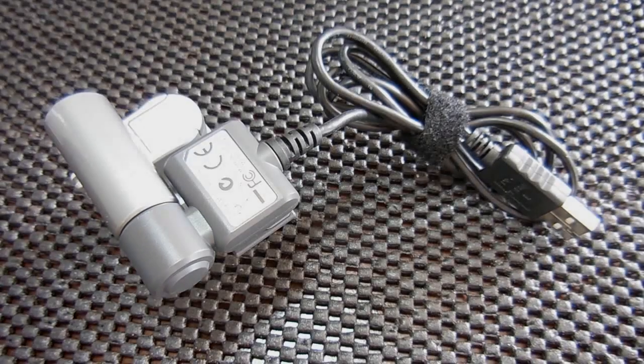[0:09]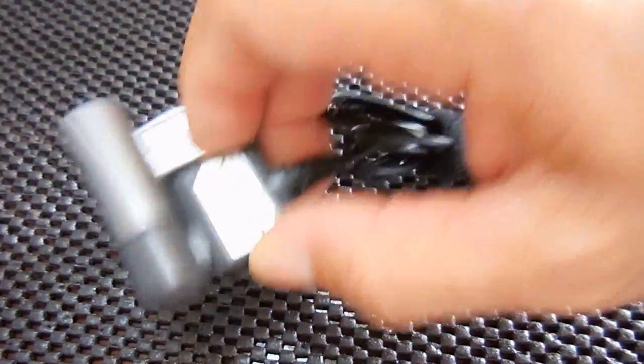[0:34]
In today's video, I'll be showing you an excellent way that you can make a microscope for your computer, which can take quality images as well as video. The total cost is actually very inexpensive. You can do this for around $13 or less if the parts are purchased on eBay. The microscope here that you see that plugs into my computer will magnify up to 50 times. Let's get started. I'm going to show you how to put one together.
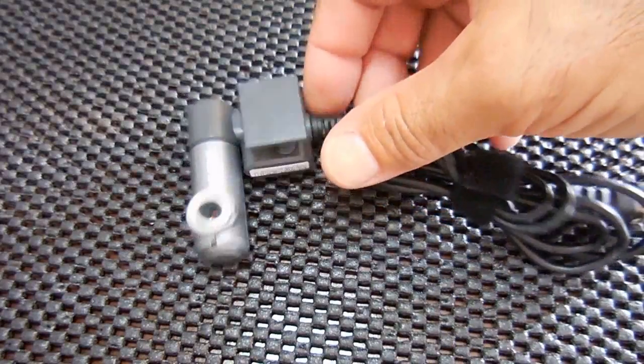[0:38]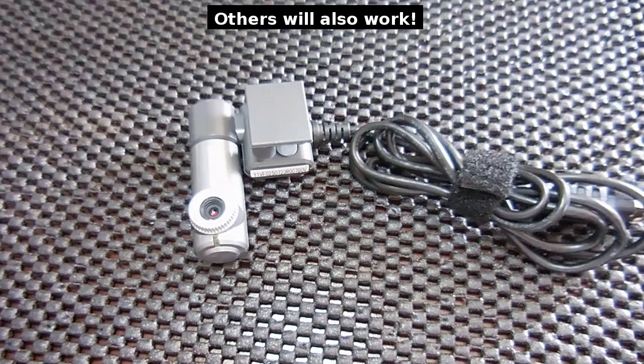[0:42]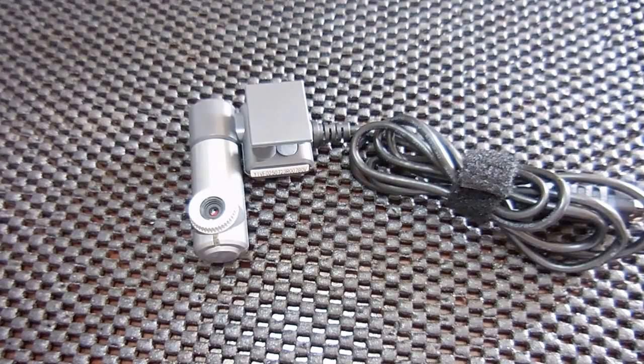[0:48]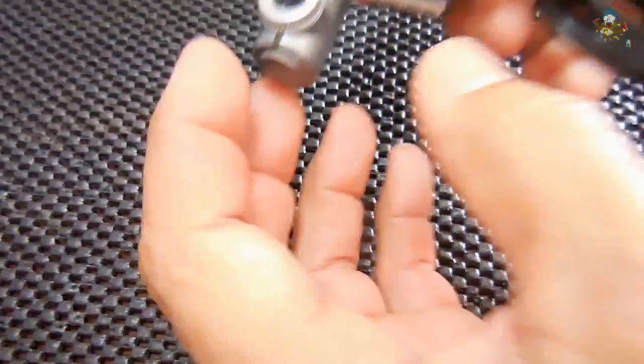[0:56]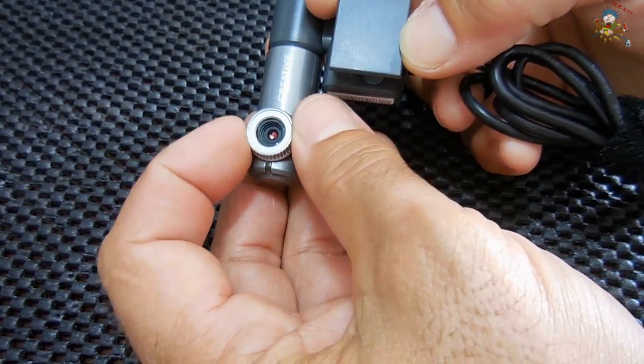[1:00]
The first thing that you're going to need is one of these older Creative Live webcams. The one you're looking at here is model number VF0250. Now, I picked this one up, you see here, for around $8 shipped. You can find these on eBay used between $5 and $12 each. This one here has an adjustable lens for focusing. This is not an autofocus.
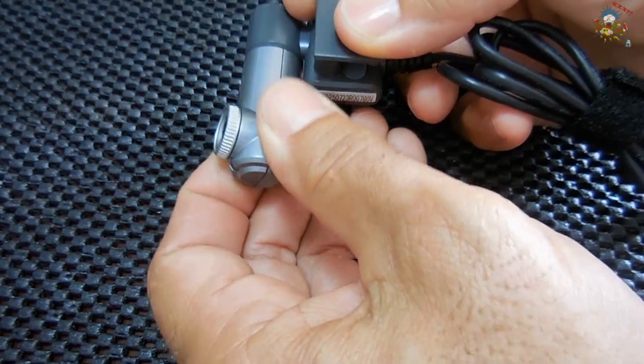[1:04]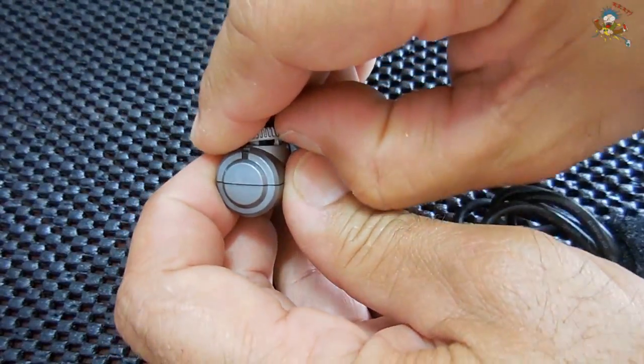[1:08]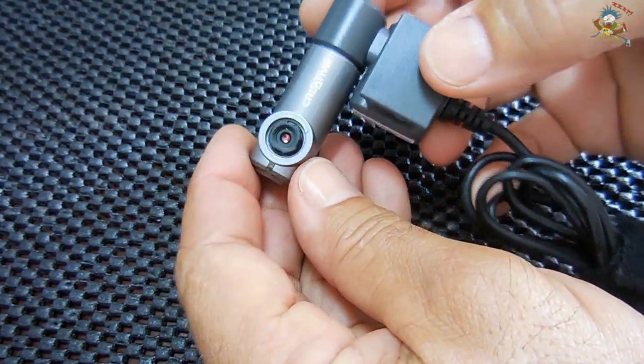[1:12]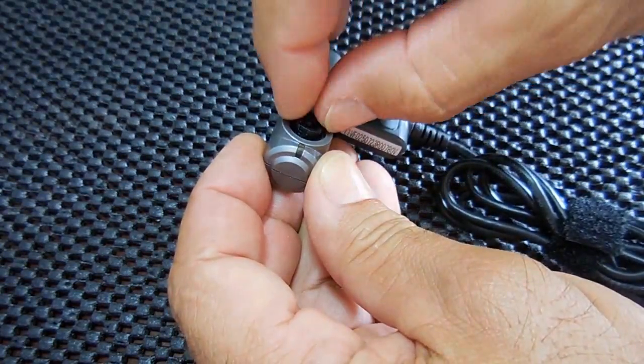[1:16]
This whole part rotates nicely. The bezel pops off with your fingernail. You're going to have to remove that for this project. And this will still turn by hand. Right now it's turning to focus.
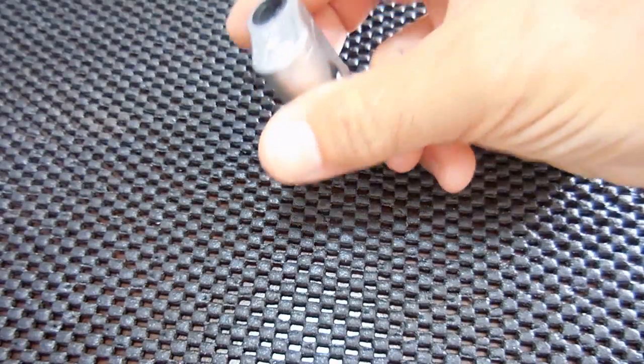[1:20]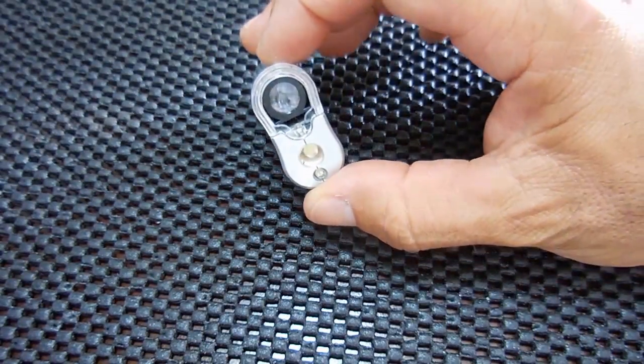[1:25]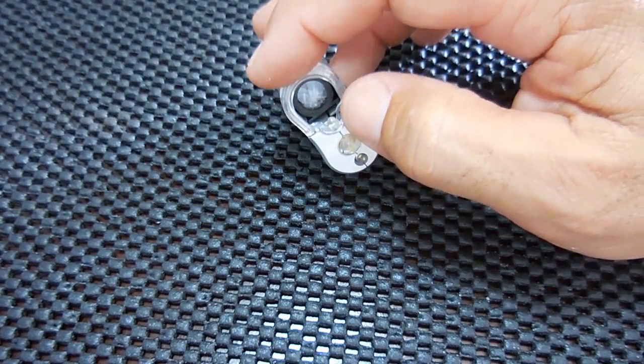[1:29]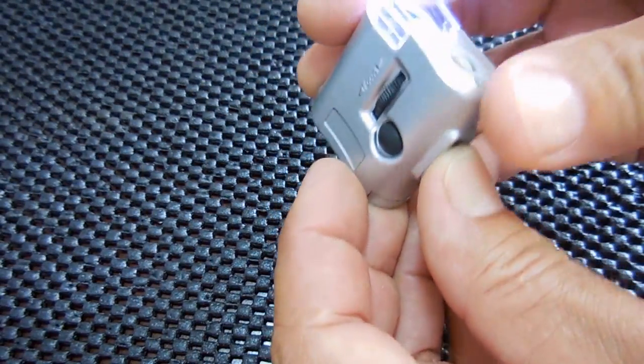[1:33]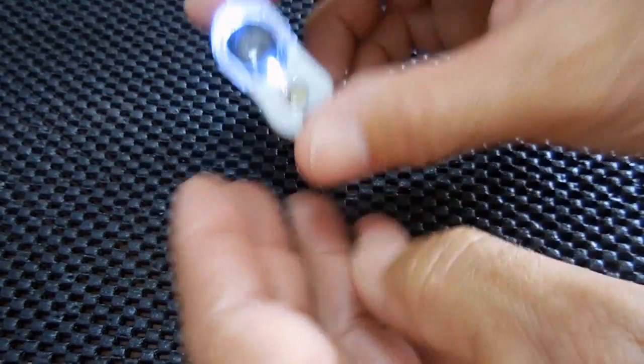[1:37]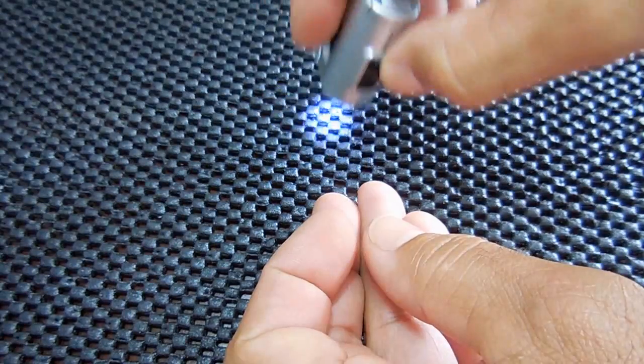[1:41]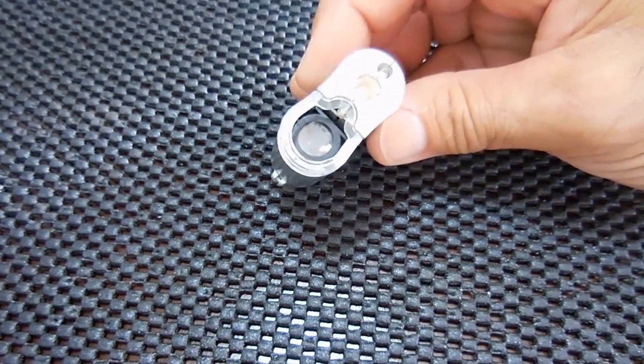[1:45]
The other thing that you're going to need is right here. This is a pocket microscope, and they retail around $3 or $4. They're very inexpensive. That's an LED right here. There's an LED right here as well that lights up. Let me turn that on. You can see it's lit up in the area where you would be viewing. You can turn that off. This is just an LED for lighting a general area like a flashlight. They do work extremely well for that low price.
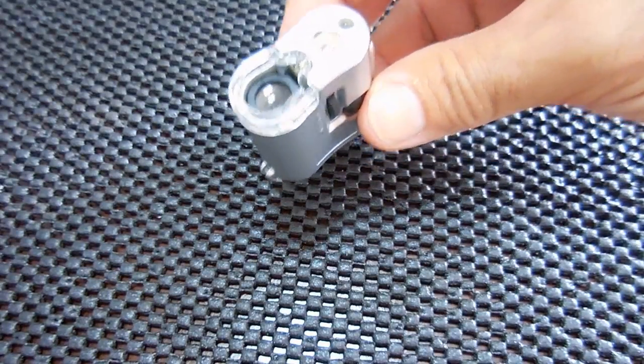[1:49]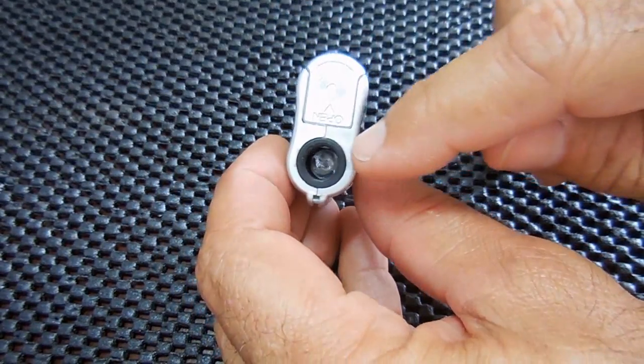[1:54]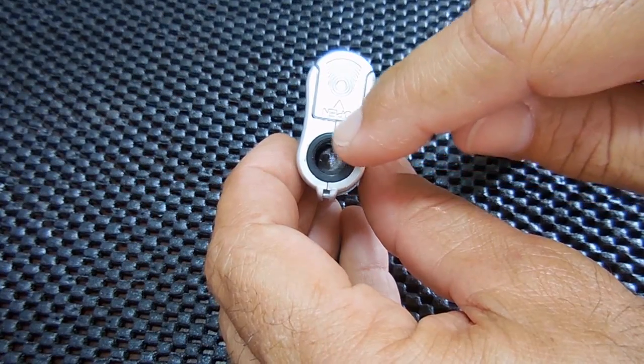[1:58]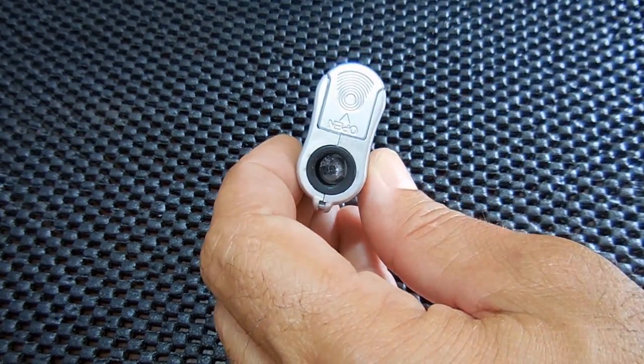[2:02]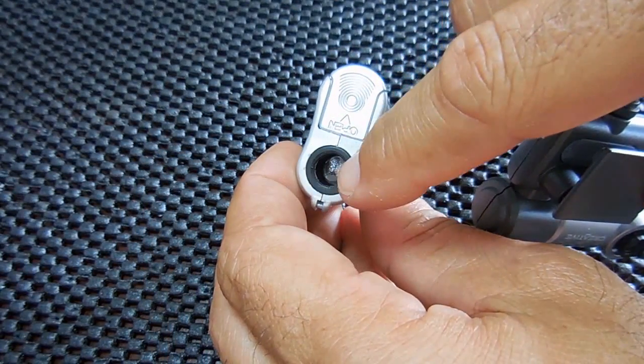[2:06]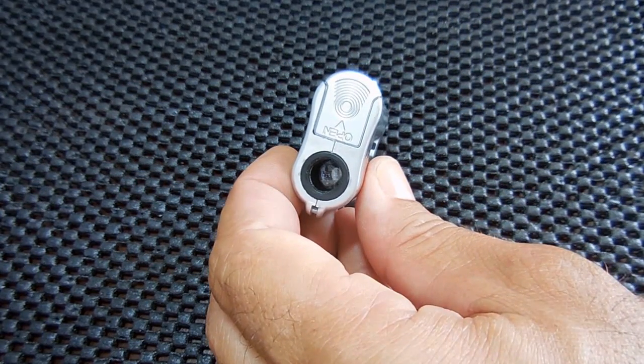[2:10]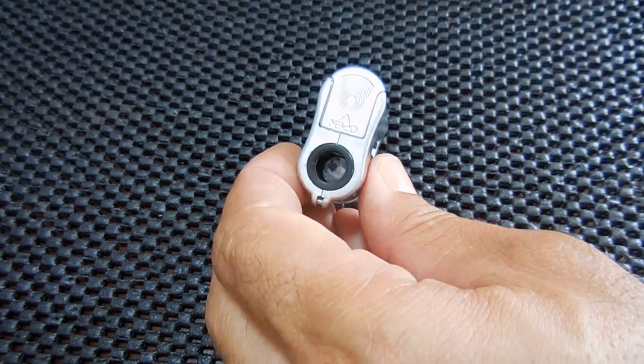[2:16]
In order to connect the Creative Live webcam to this pocket microscope, you're going to have to enlarge the hole at the end here. This was a small hole in a piece of plastic. I had to make that larger to accept this part of the webcam. It's going to snap into that opening you see here. In order to do that, you're going to need a twist drill or a drill bit, either 21/64 or 11/32.
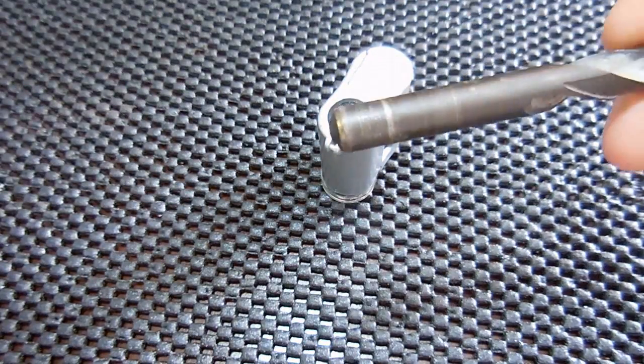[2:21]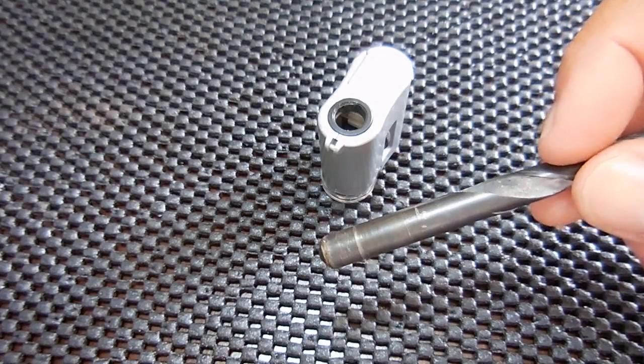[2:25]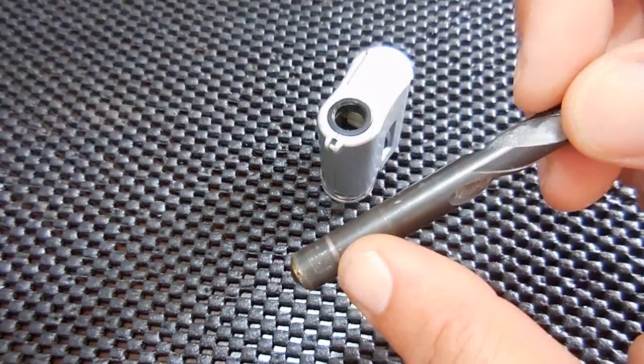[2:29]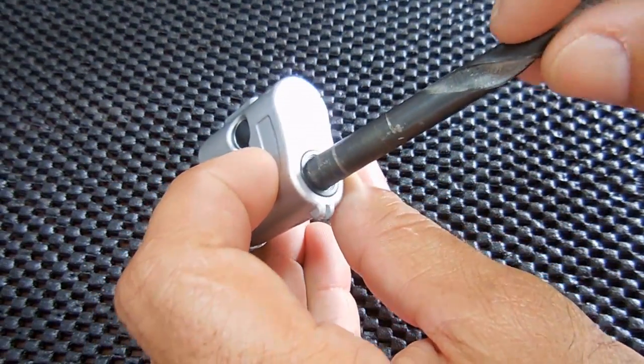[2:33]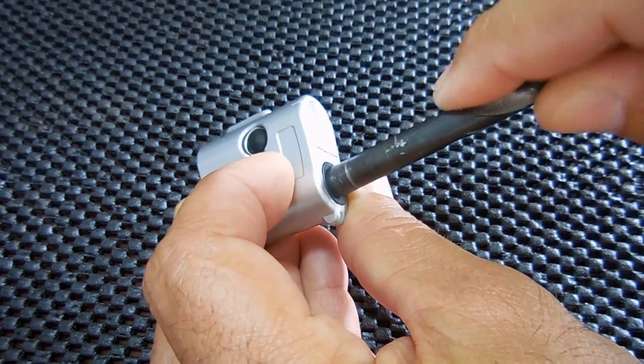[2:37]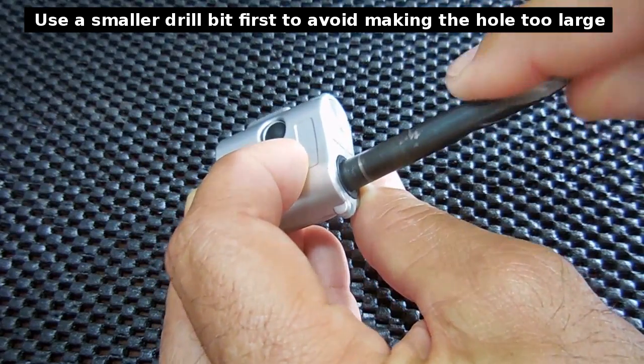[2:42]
And what you're going to do, you're going to heat the end of the bit right here over a flame or over a gas burner. Get it nice and hot. Don't get too carried away that it's glowing, but just heat it up enough that you can insert it into the plastic and get the proper diameter. You push it all the way in, and then once it's in, you twist it and pull it back out. This is a snug fit, and pop back out.
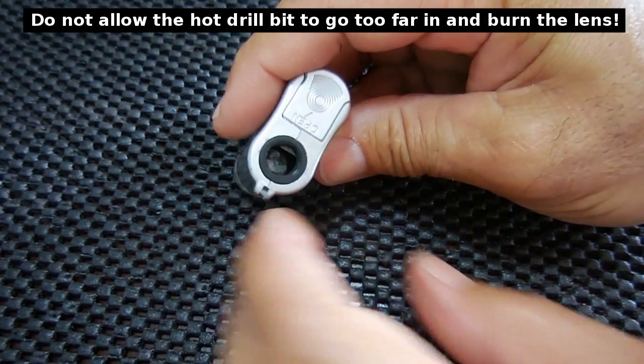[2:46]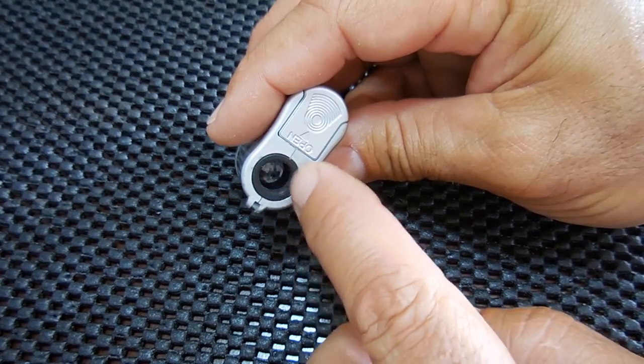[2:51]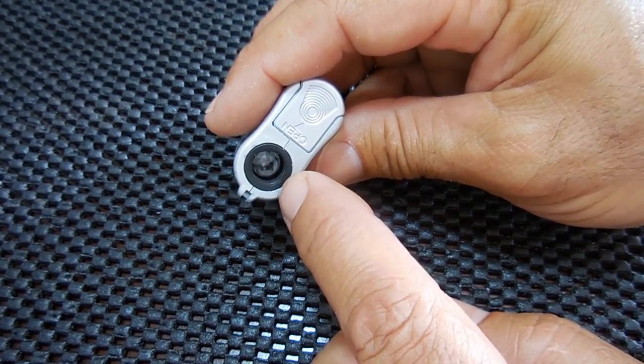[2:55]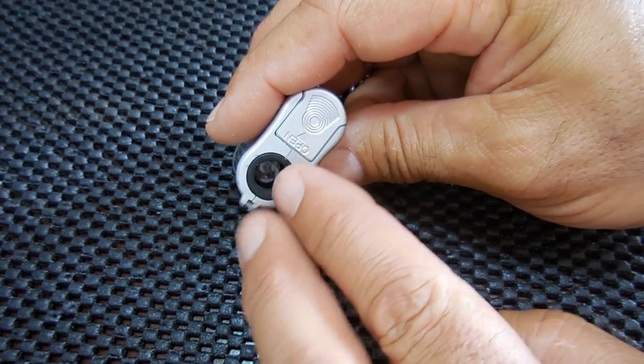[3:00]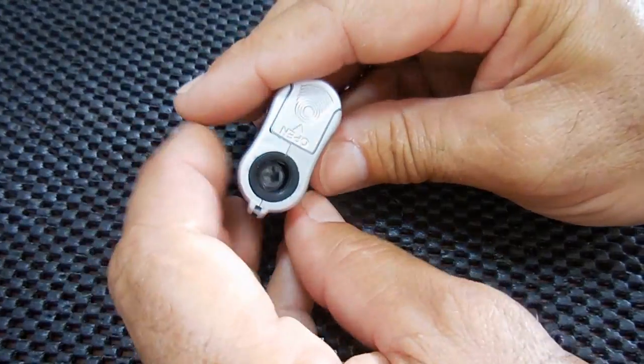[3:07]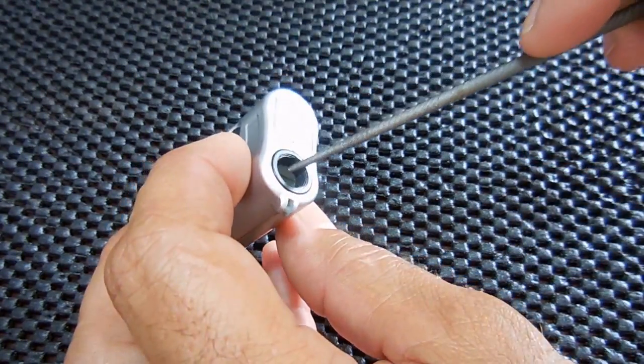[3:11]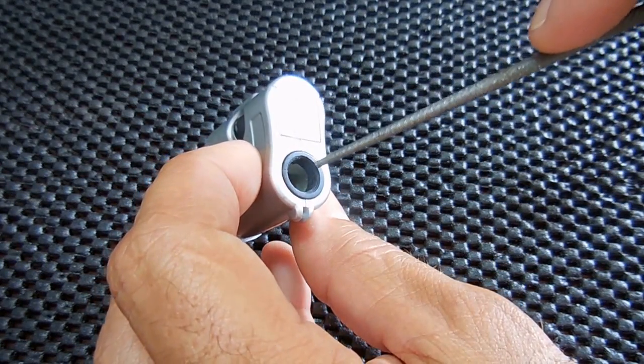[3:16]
Once you push it in, you're going to notice there's going to be some plastic that was melted that pushed in. It kind of curls up when you remove the bit. Once it cools, take some tweezers. You're going to reach in carefully without scratching the lens, and you're going to grab any pieces of plastic that you pushed out of the way with the drill bit. Just grab it with the tweezers. If it's kind of messy in there, you're going to take a rat tail file or a round file and gently clean away the edge. Don't go too deep. You will hit the lens and scratch it. Just keep filing it nice and smooth.
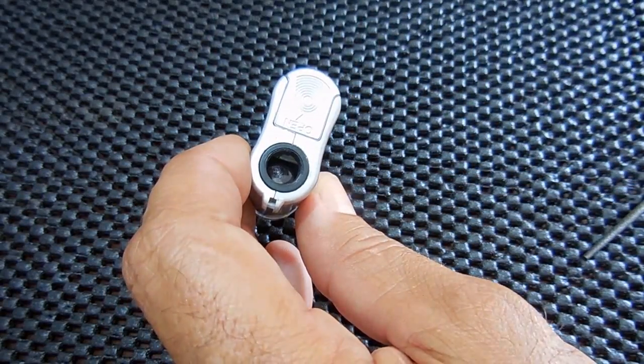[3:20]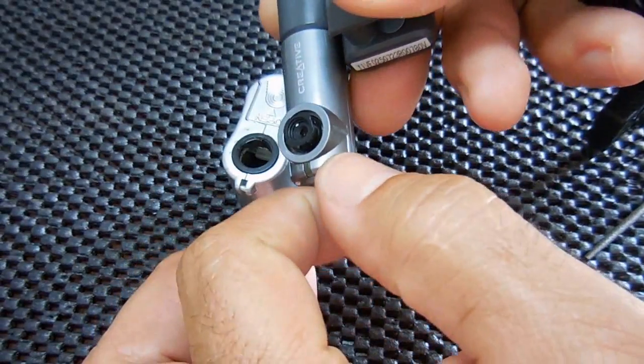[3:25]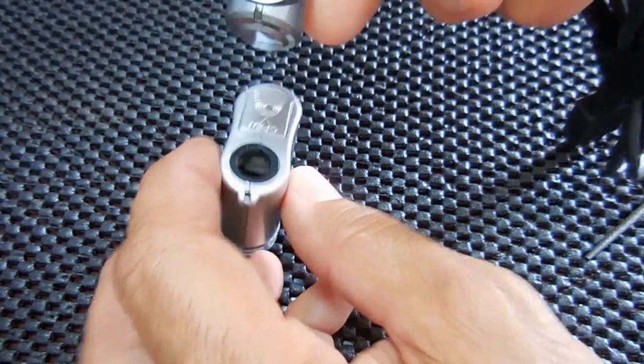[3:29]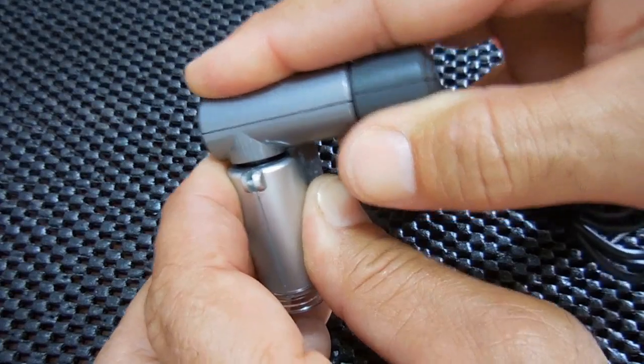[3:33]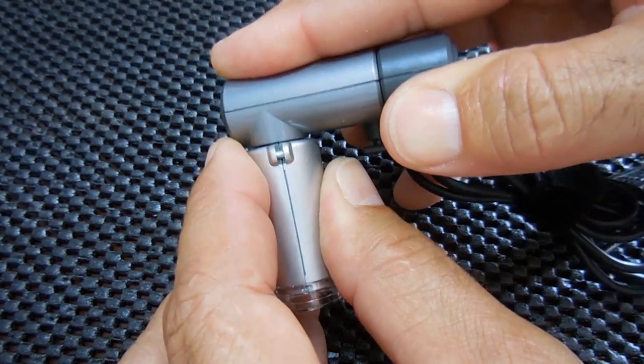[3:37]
Once it's nice and smooth, you're going to try fitting the webcam, this part right here, the black part that sticks out, into that opening. So I'm going to line the two up. And as you can see, it fit perfectly.
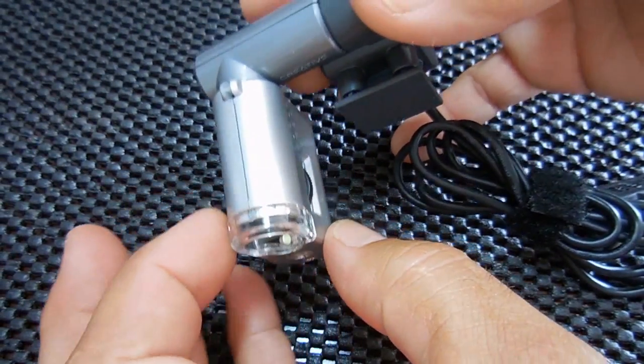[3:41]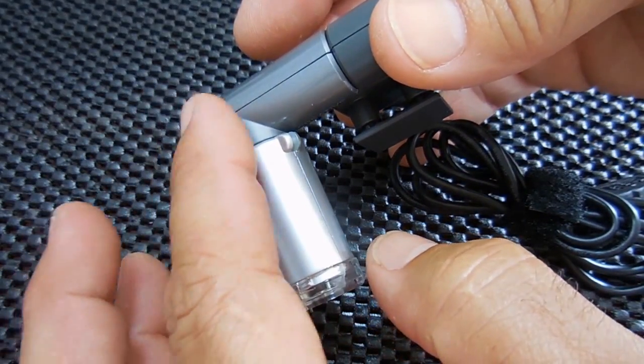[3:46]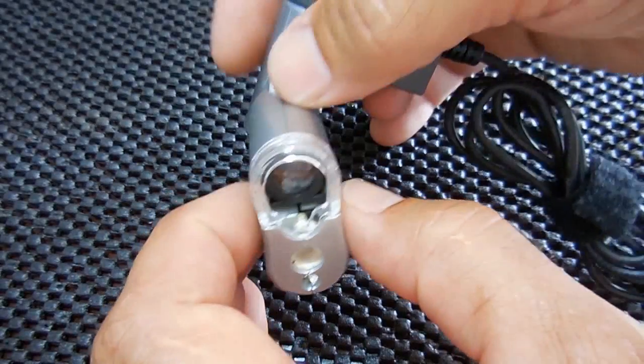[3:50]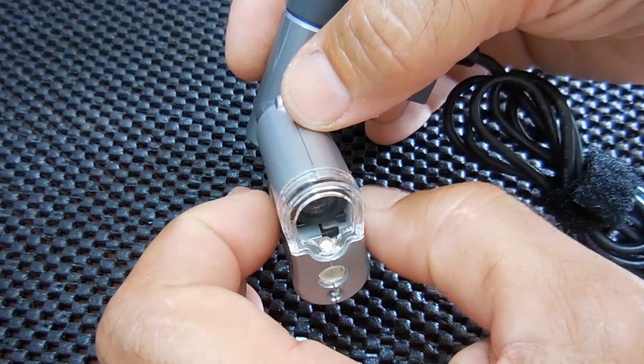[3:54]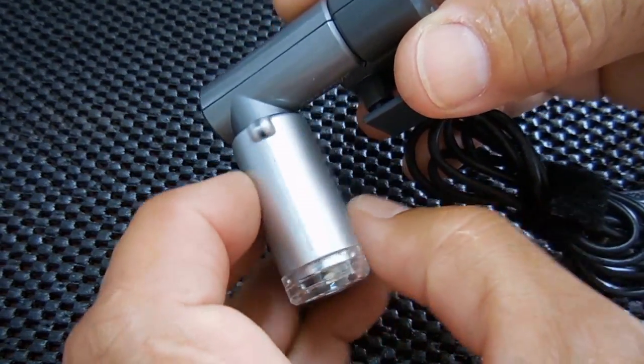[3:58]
Now, as I'm rotating the microscope, I'm actually adjusting the focus, because there's two ways to focus the microscope. One is using the knob right here. You can see it going up and down. All right, that's one way to focus. And you can also adjust the focus by rotating this as well.
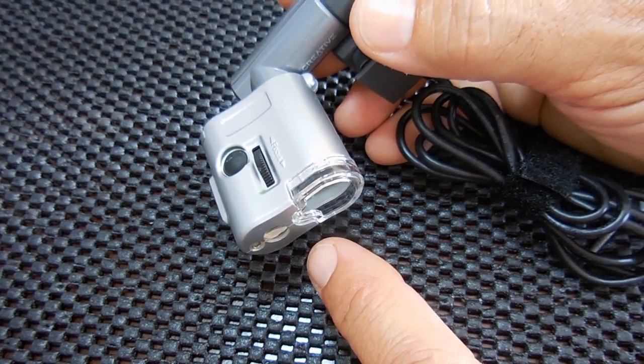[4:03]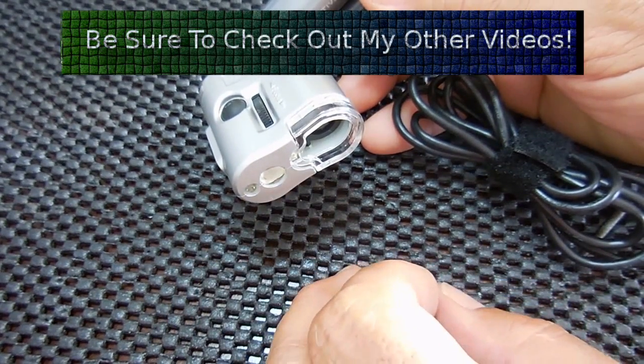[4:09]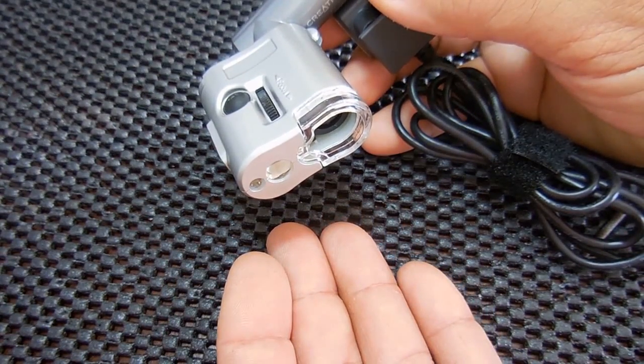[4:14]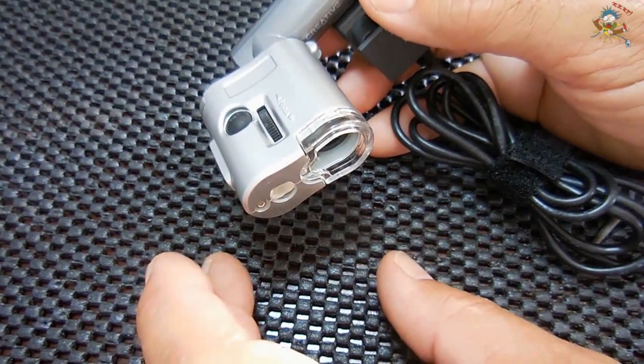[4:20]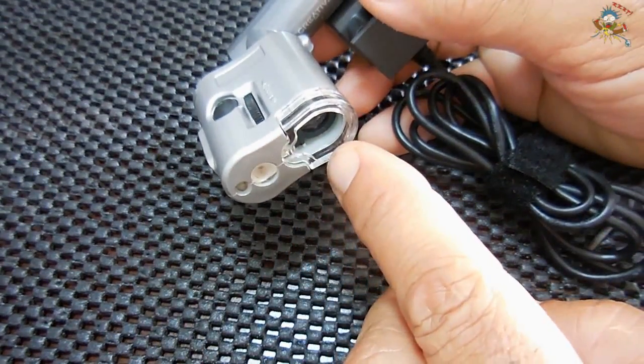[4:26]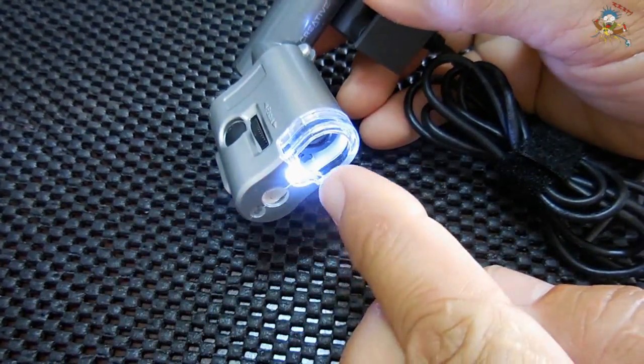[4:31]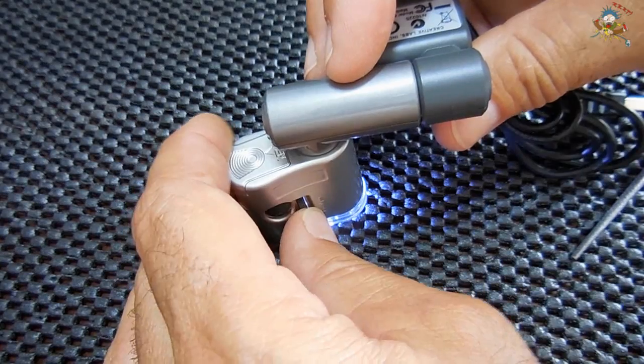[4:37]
Now, what I do, because I like to look at surface mounted components on a circuit board, as well as other things on top of a surface that I want to look down on, an ordinary microscope is designed to have light shining up from the bottom in order to see the magnified image. But a lot of the times, you're going to be using things that light cannot pass through, such as a circuit board or something laying on top of a desk that you would like to see up close. So that's why this has the built-in light. So when you put that on, this will light up the area underneath. You will be able to focus up and down, and you're going to have an incredibly sharp image which you can record.
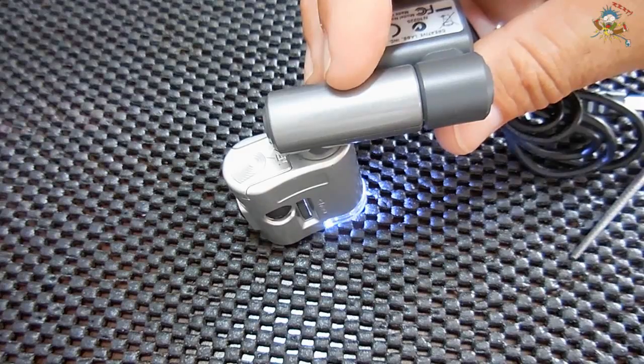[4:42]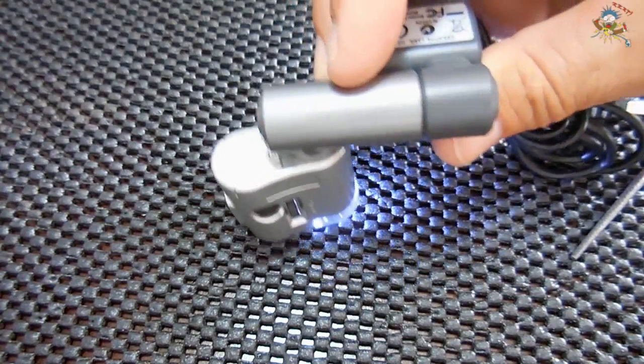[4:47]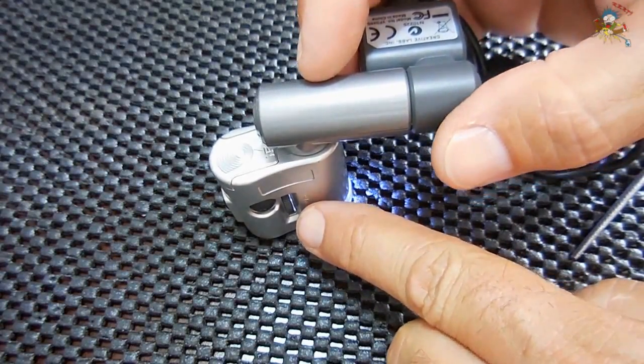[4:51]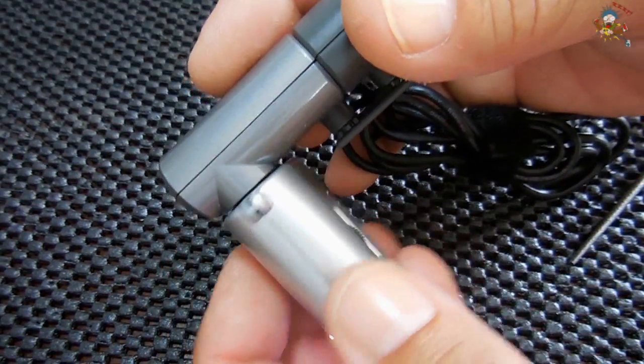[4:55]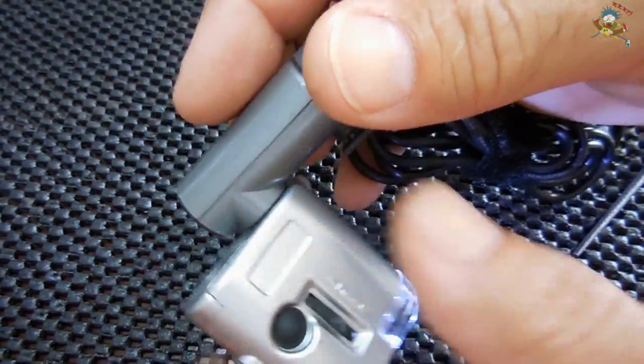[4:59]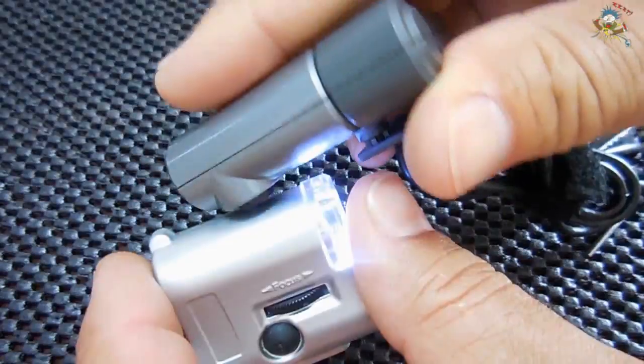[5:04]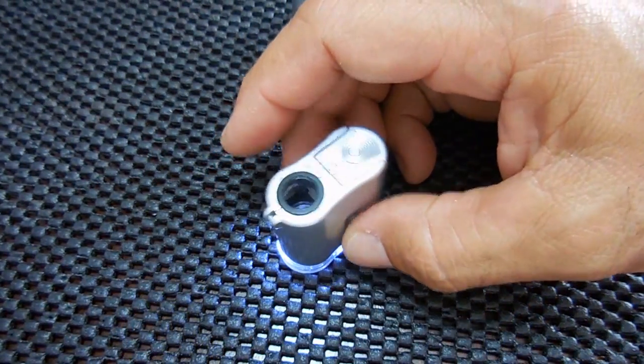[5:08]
Now, you could take snapshots of the image, or you can record a video as you're moving around to look at things. If you notice you can't get this clear by adjusting the knob, then you're going to rotate this a bunch of times until you get it in the right position. You could pop it off and unscrew the lens a little further like this, and then try it again. Once you have it properly set, you will be able to adjust the microscope for a very crisp image.
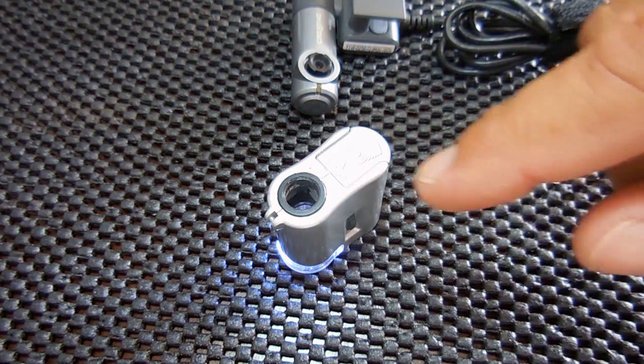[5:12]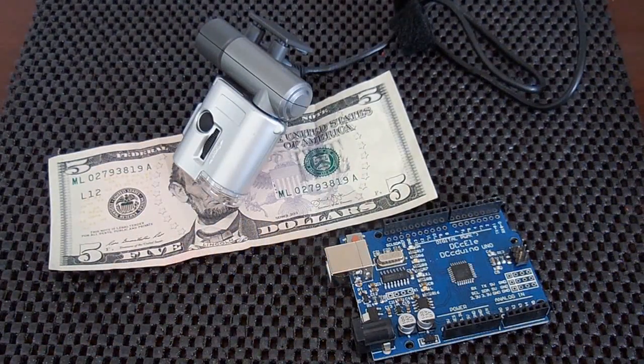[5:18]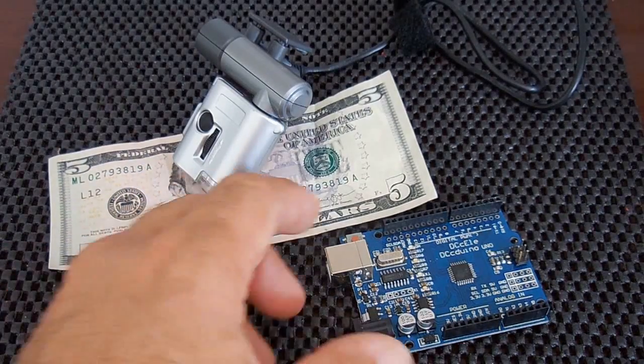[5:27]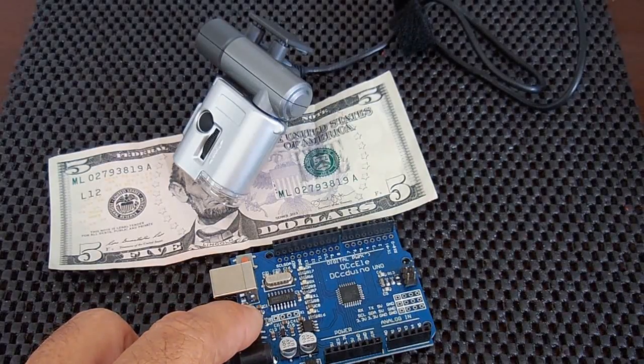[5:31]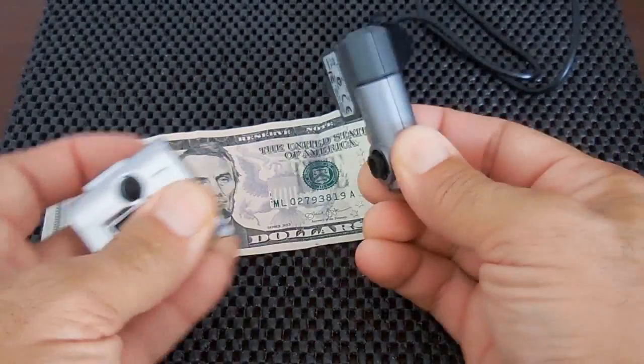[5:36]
What I'm going to do now is put this back together, plug this into my computer, and show you how well this works. The first thing we're going to be taking a look at is this $5 bill. We're going to be looking very closely at all the detail under magnification. Once I'm done with the $5 bill, I'm going to be taking a look at the surface-mounted components on this Arduino Uno board. What I'm going to do, let me pull this apart, all right?
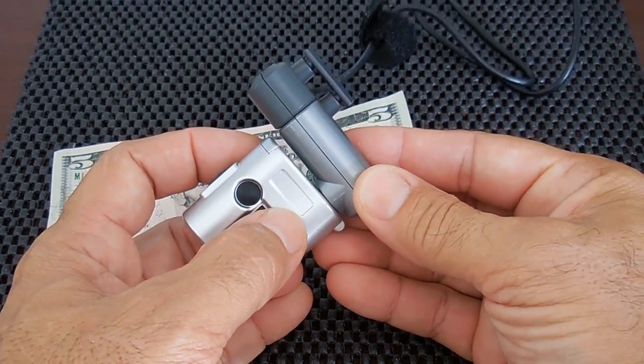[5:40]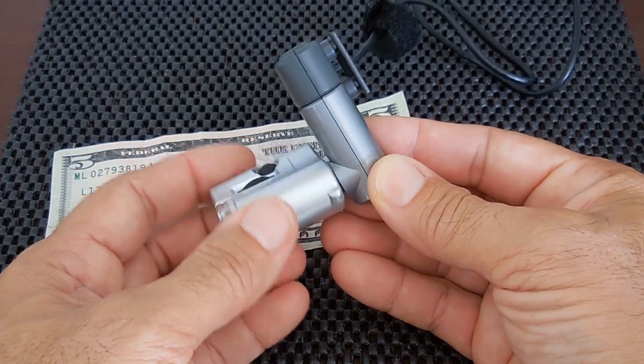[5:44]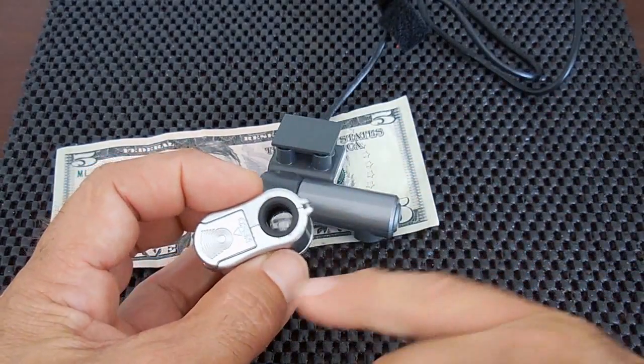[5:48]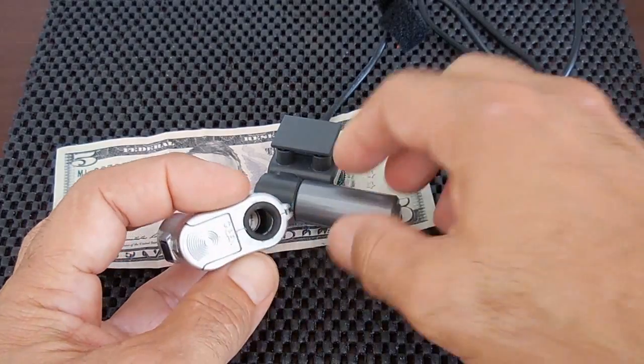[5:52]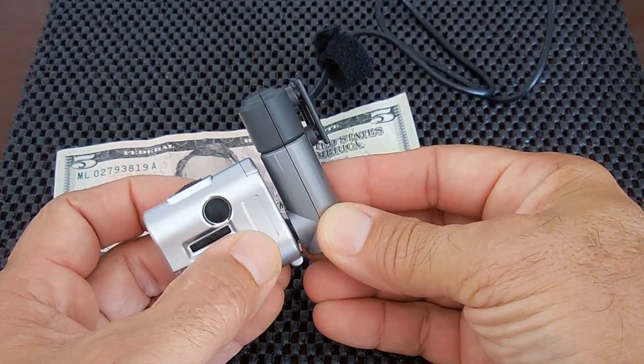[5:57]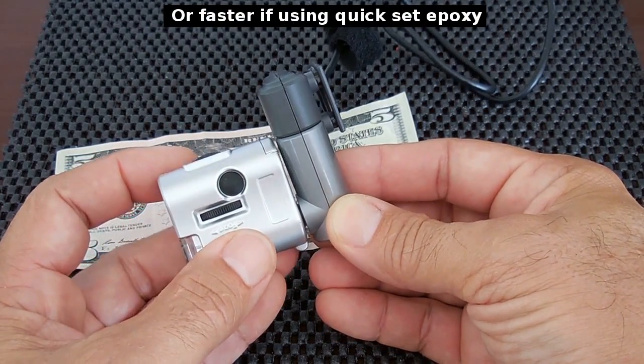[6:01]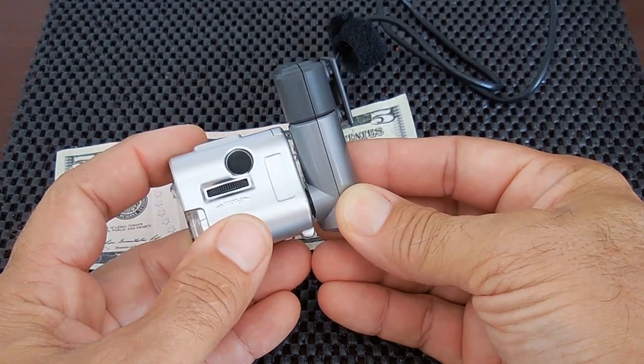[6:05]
You don't want to glue this in perfect position like that onto the scope. You want to be able to have it rotate around like I just showed you. So the best thing you can do is to apply a little bit of epoxy using a toothpick to the inside edge of the plastic ring, and then you could push this in, let it snap in place, and dry overnight. By doing that, the two of these will stay together and not separate. You will also be able to rotate around the microscope to help focus what you're looking at.
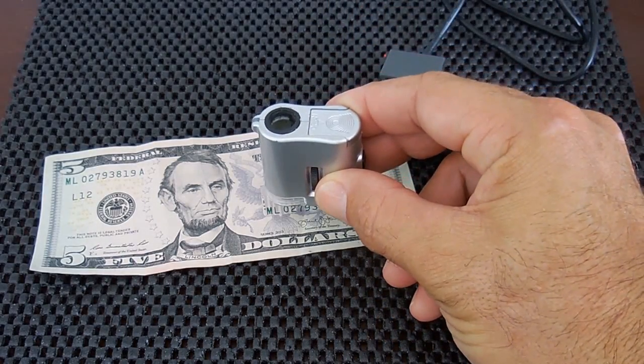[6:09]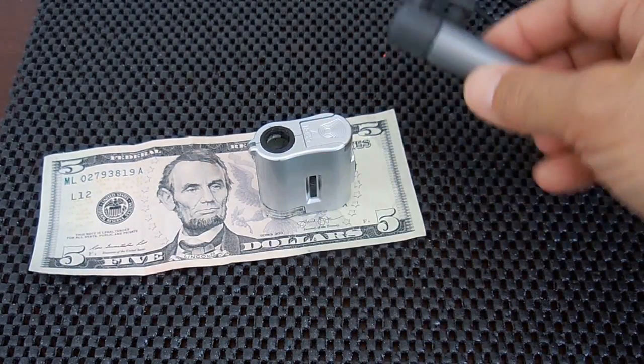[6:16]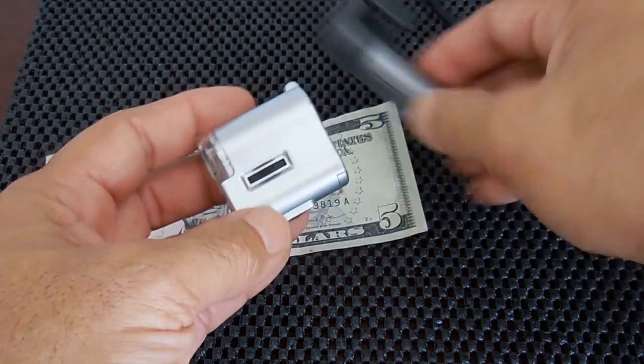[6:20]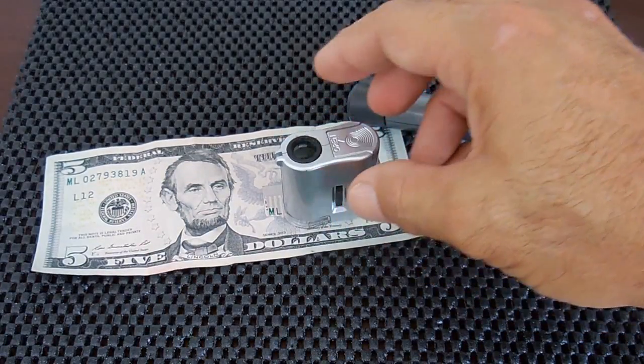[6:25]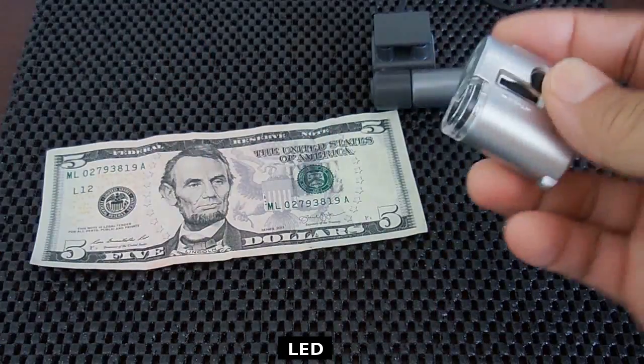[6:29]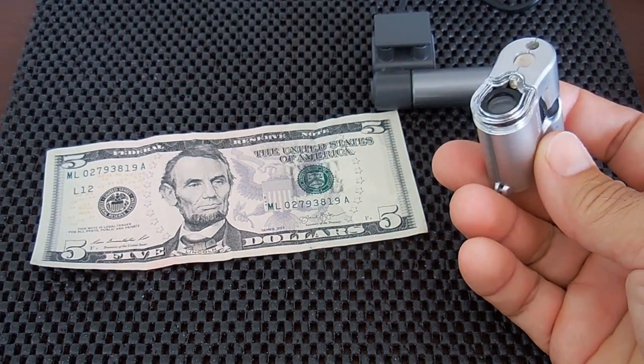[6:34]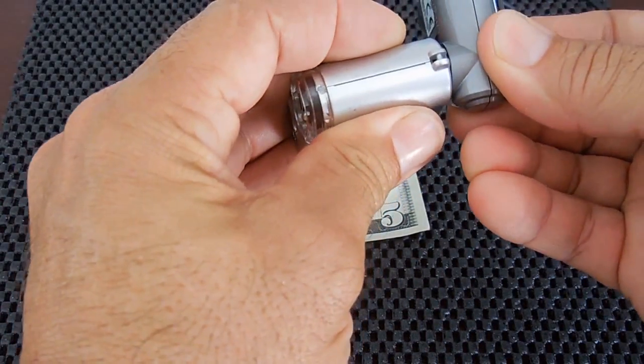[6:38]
There'll be certain times when you're going to want to hold the microscope a little higher above the surface to look at things, and there's going to be times when you're going to want to place it right against the surface. That is why it's very critical to have this moving around so you're able to adjust the height off of the front of the scope here from the surface. You also have an ultraviolet light, and it requires 3 button cells, which is 4.5 volts. Let me connect this back together and show you what this is capable of.
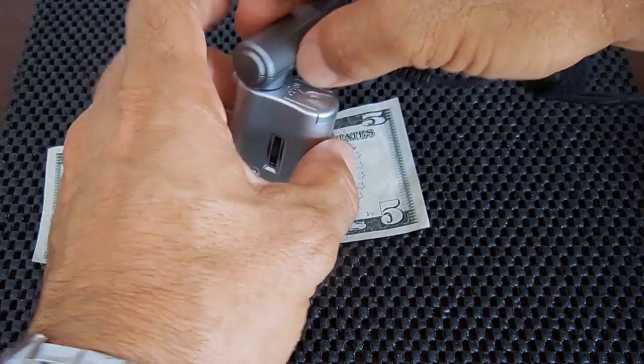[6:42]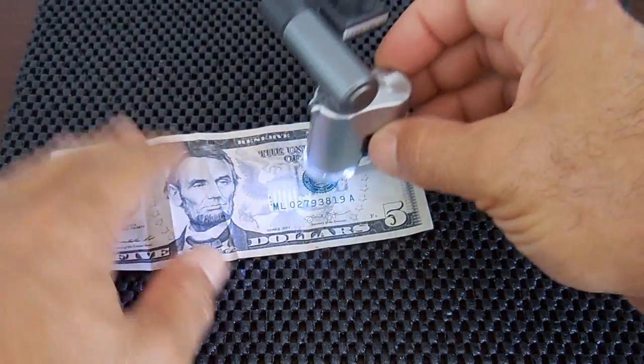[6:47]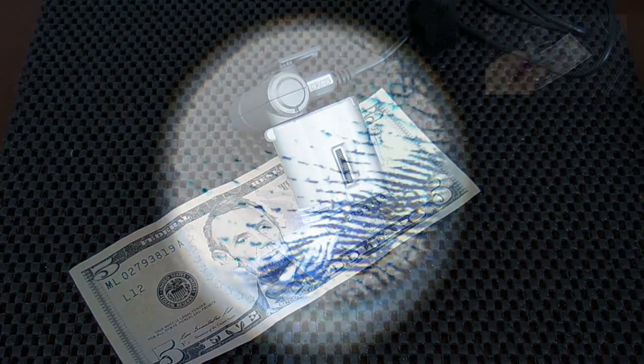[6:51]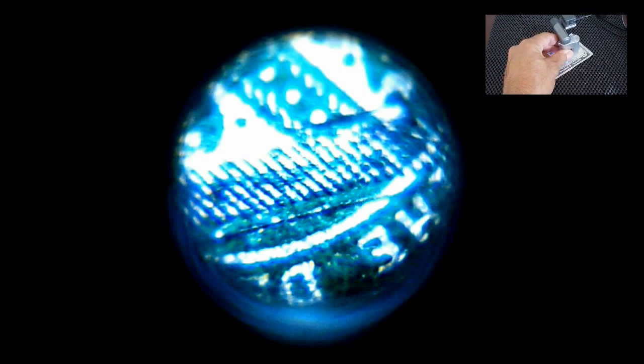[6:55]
Okay, pop back in nicely. We put on the light on the bottom. Position it like that. Lay it down. All right. Let's take a look over towards the seal here. Let me move over towards the seal. Now it looks pretty damn clear.
You see fine detail, and I could adjust it. The bottom one, once it's in, I have this in the perfect position right now for this, because it's focusing perfectly right there. You can see all the detail. You can see pretty incredible for a $12 or $13 setup that I made. Now let's go over here towards the other seal.
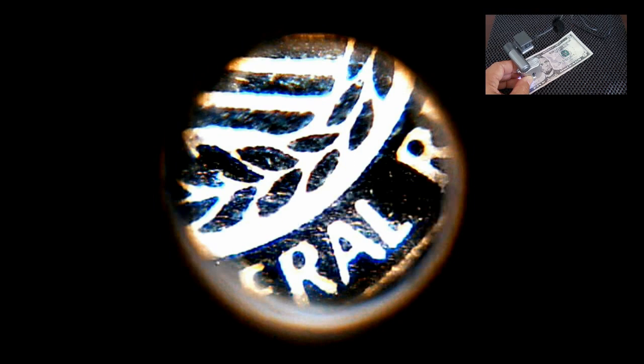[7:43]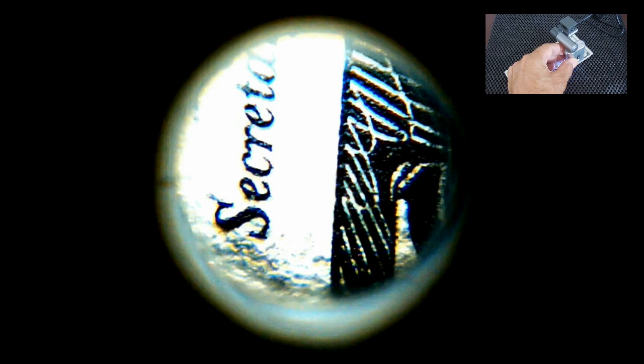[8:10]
Birds are having a field day today. Yeah, take a look over here. Move over to here. Great detail. I don't think you can expect much better than this, especially for the price.
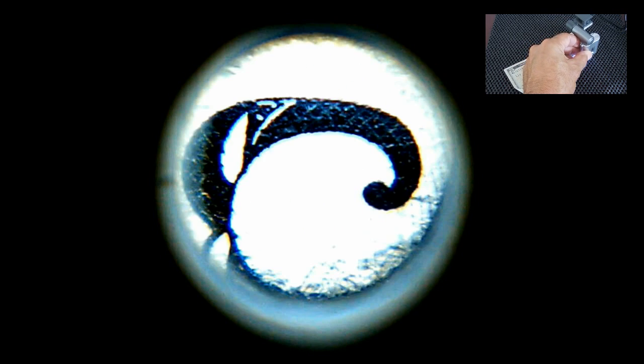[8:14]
All right, let's take a look at the circuit board now. Put that off to the side. That's the Arduino Uno, or a knockoff version of it. Okay, let's take a look at this chip right here. All right. Look at how clear that is. Atmel. You can see if there's any solder bridges between the pins.
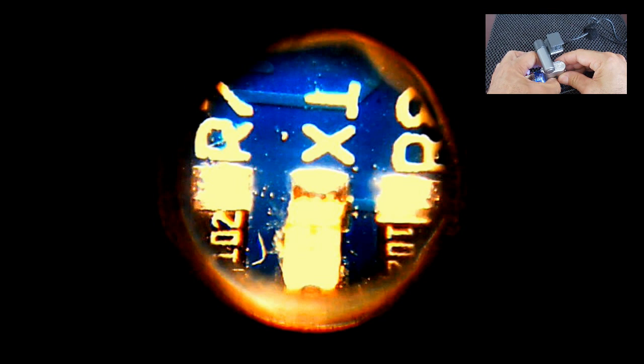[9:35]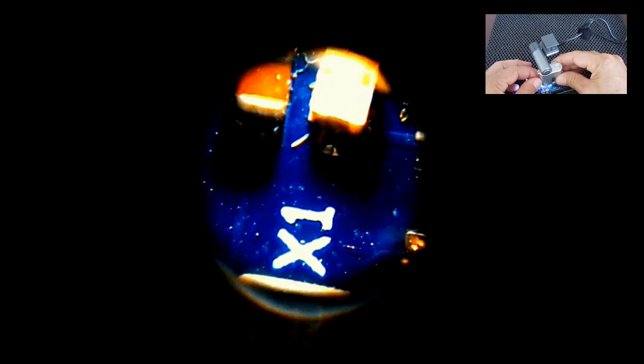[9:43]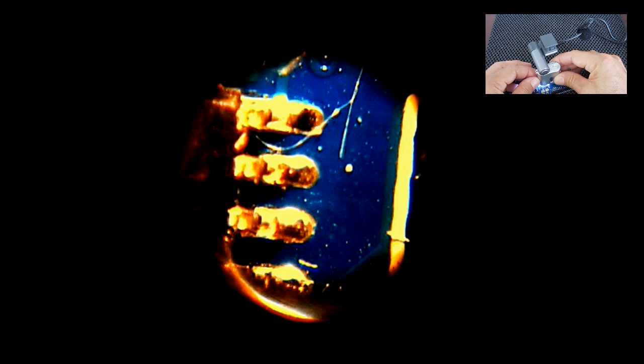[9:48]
Turn it around. Now, if I wanted to hold this a little higher up above the board, like 1/4 of an inch or 3/8, you're going to have to spin this around like this to allow you to focus it higher above the board. The position I have it now only allows me to focus fairly close, like right there. See, I'm going to adjust it clearer. That's pretty darn good. I'm looking at all the, you can see the traces. And all the other pins. Let's go over here.
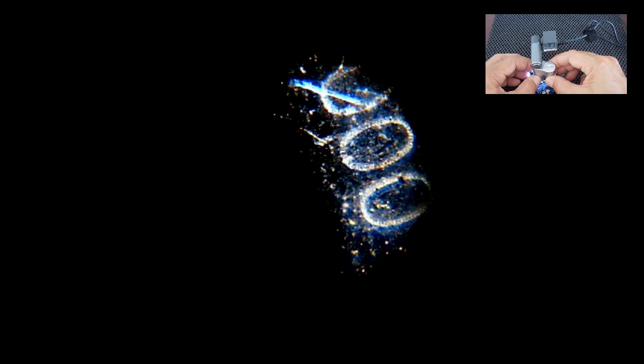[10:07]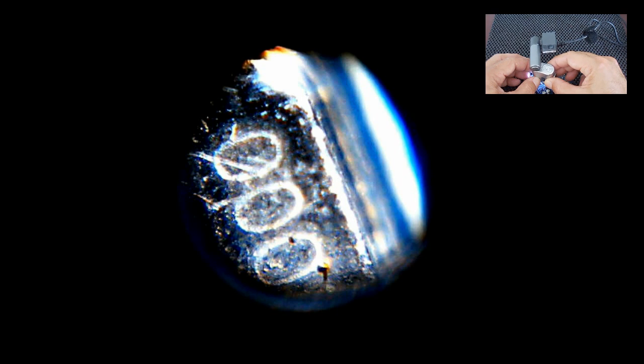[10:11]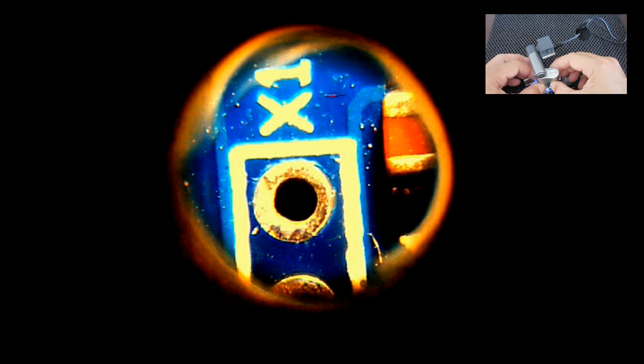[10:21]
Take a look at the top of this crystal right here. Let's take a look at this crystal. Look how clear that is. See every little imperfection in the housing of the crystal. Let's go over here. I can move it up and down to make it clear. Right there is pretty clear. Take a look at the top of these capacitors. It's a very useful camera, and it's very easy to make.